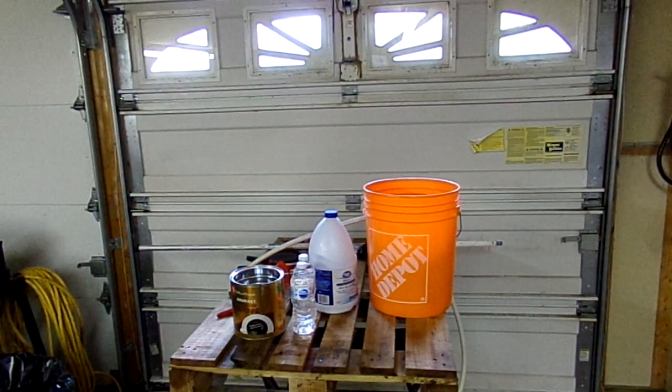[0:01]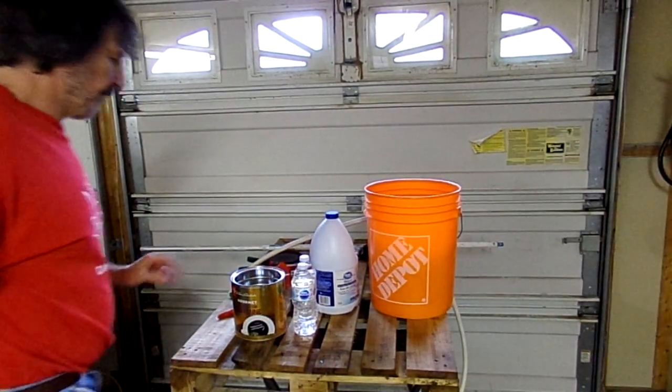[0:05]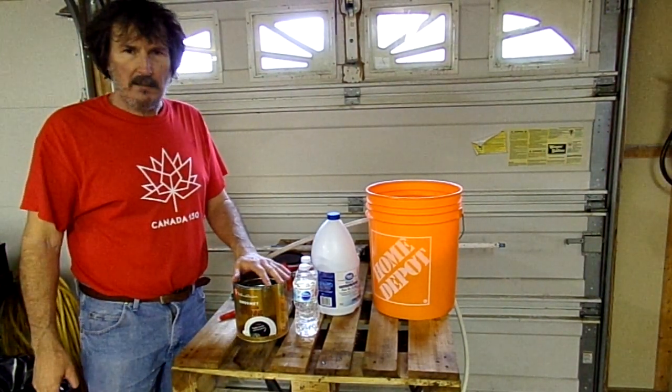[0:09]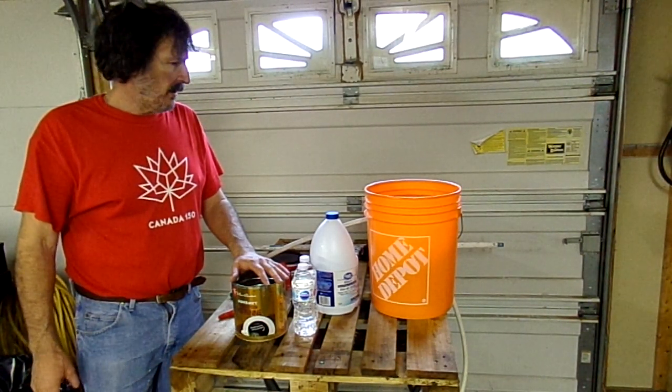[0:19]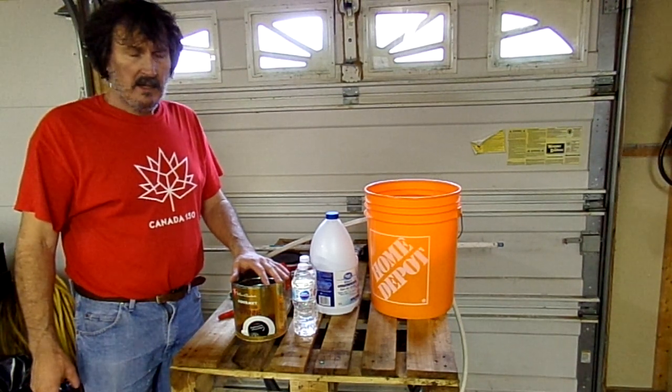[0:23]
Okay, guys, we're recording. Okay, what I'm doing here is I'm going to take the Apollo 13 approach and essentially build a ventilator out of parts at home. If somebody's way out somewhere, they can't get to a hospital, or you need a portable ventilator because you're really sick, this will help. I'm just trying to use homemade parts.
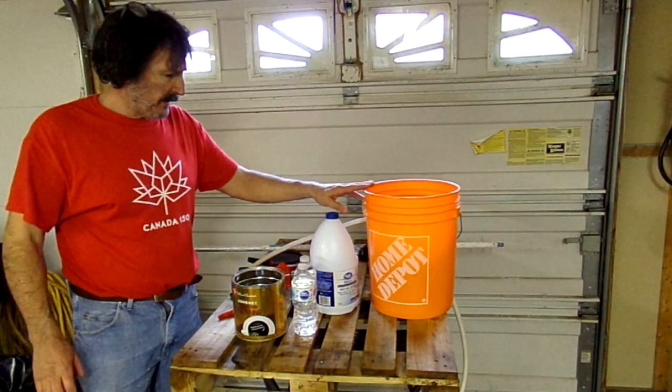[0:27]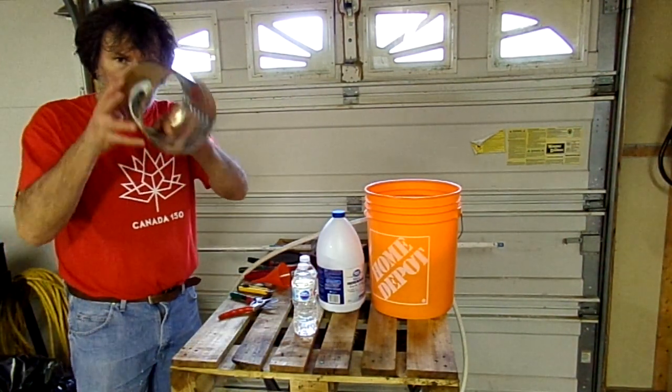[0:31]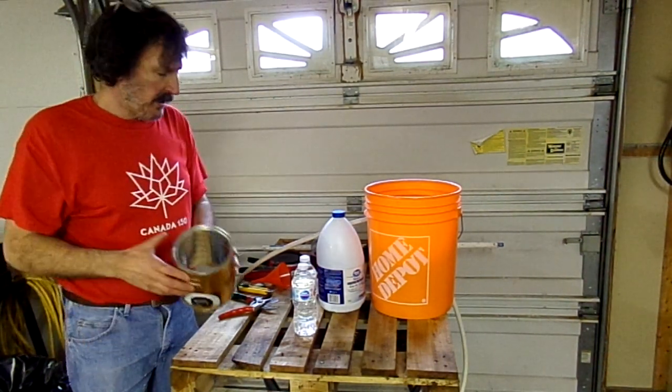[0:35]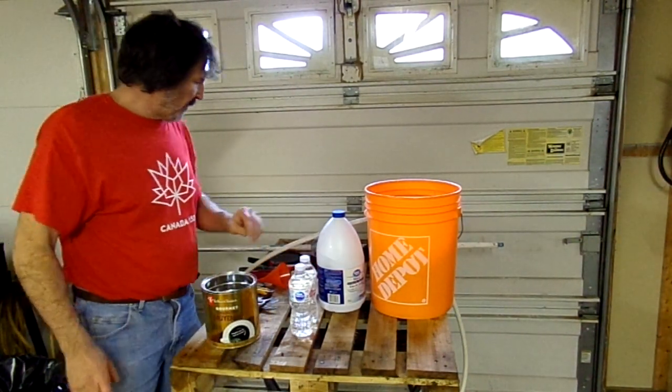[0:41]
I've got a 5-gallon bucket, which most people have. A bleach container, a coffee can. I cut the bottom of the coffee can. I've used a tin coffee can. Don't use a cardboard one because it'll disintegrate. A few water bottles. We're going to need
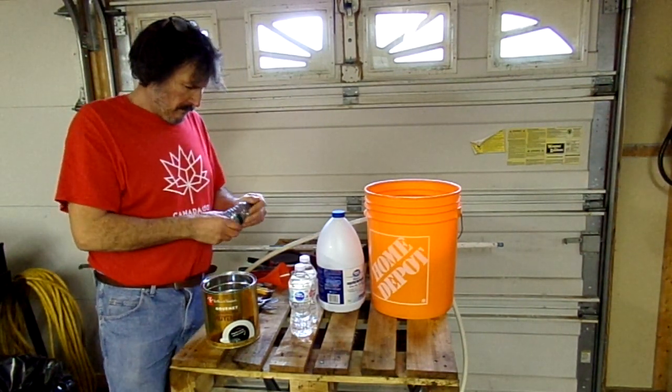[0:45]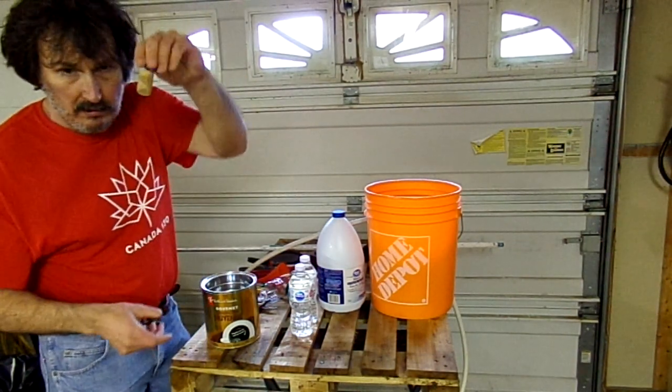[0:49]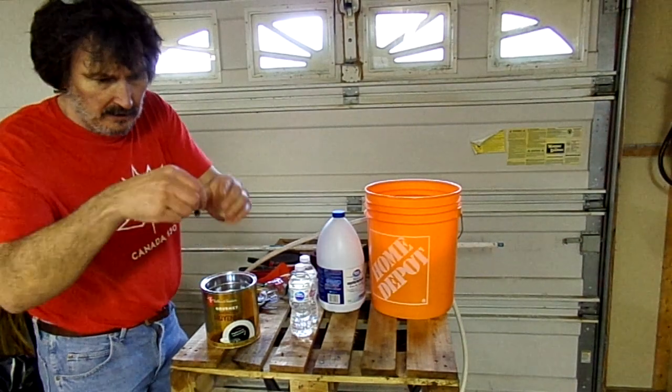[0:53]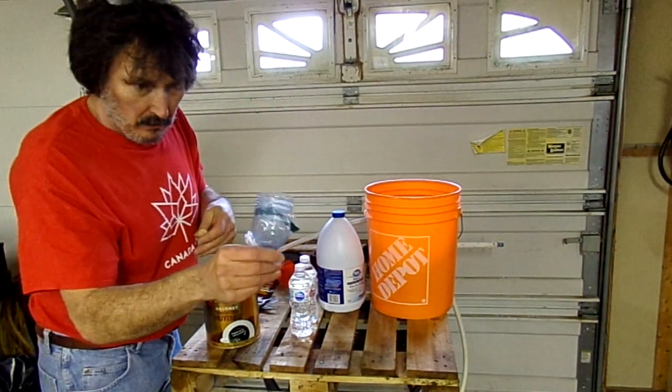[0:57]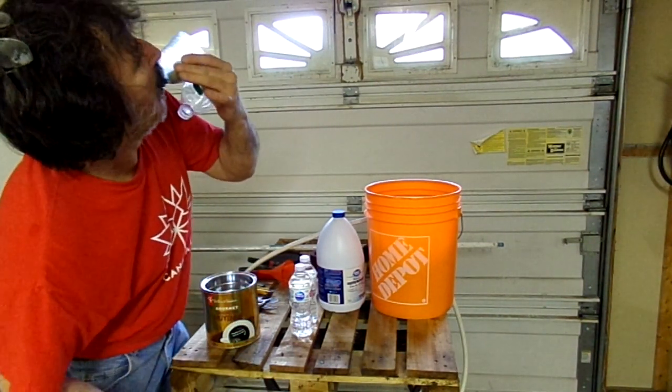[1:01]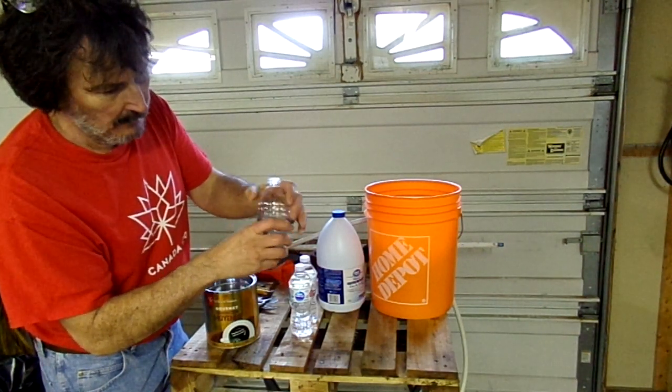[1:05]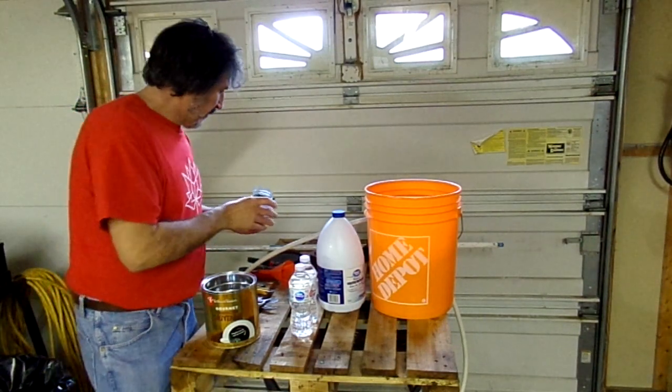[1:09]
if you've got a couple of wine corks around, get a wine cork with a drywall screw and a little nut on the bottom. And we're going to use a water bottle. Drop that in there like so. That'll actually work as your one-way valve to let the air out. Okay, without further ado, let's go.
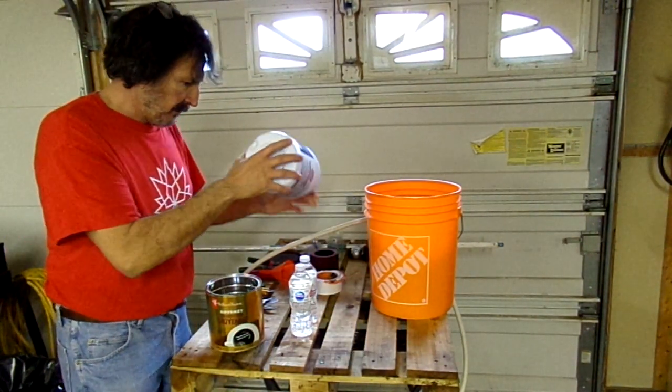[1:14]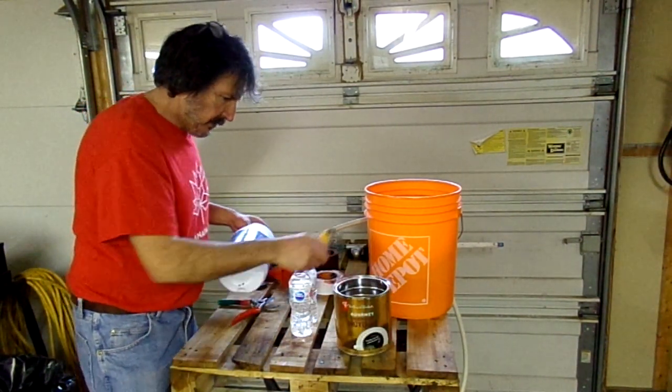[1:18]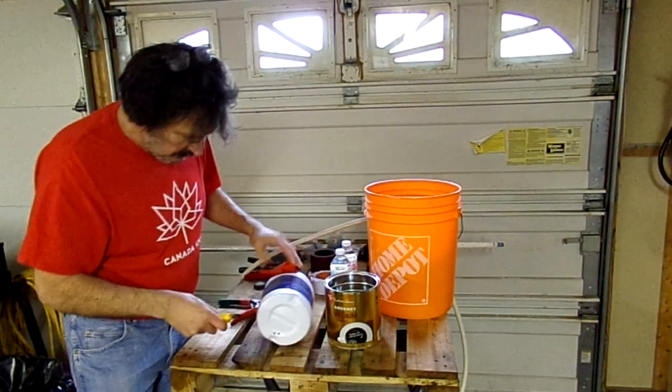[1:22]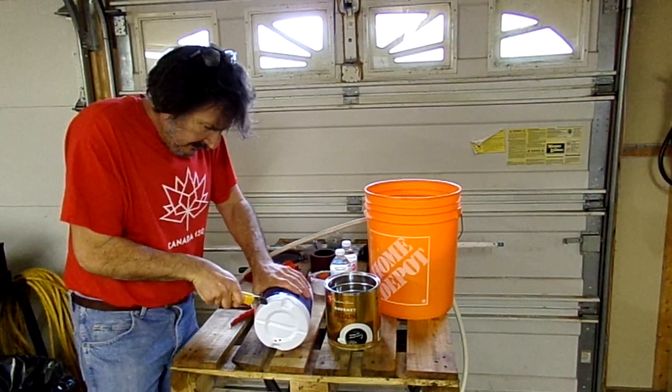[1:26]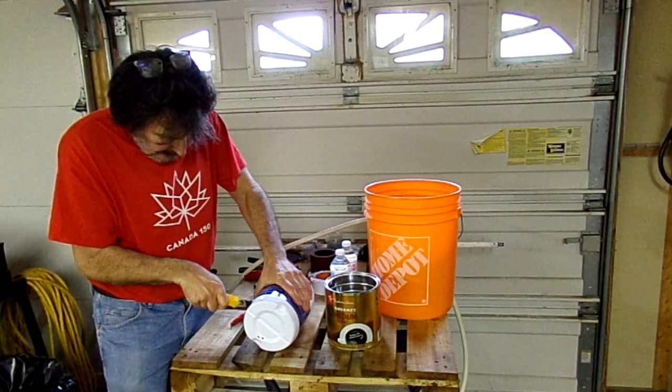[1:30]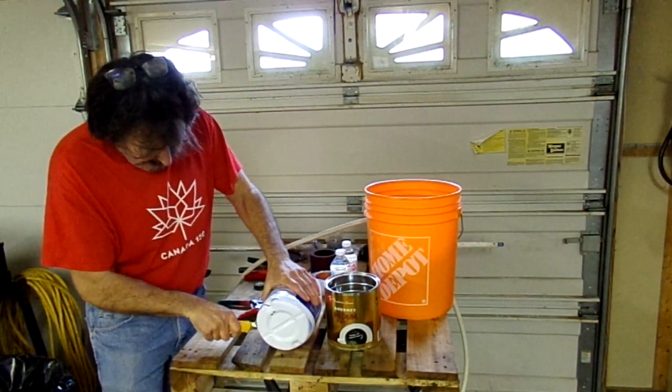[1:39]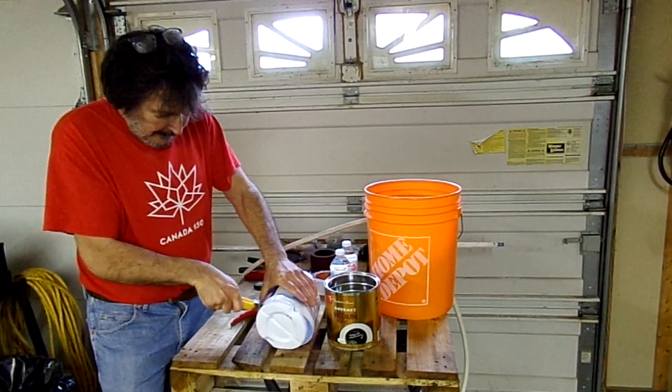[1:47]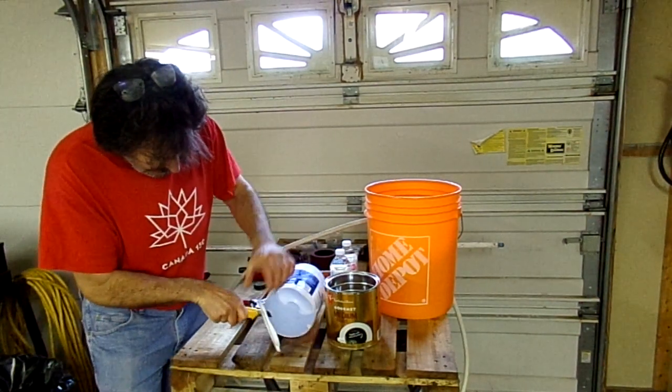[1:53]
I gotta cut the bottom of this out. Don't cut yourself while you're doing this work. And essentially, we just need to cut the bottom of this off. Make sure you wash everything thoroughly.
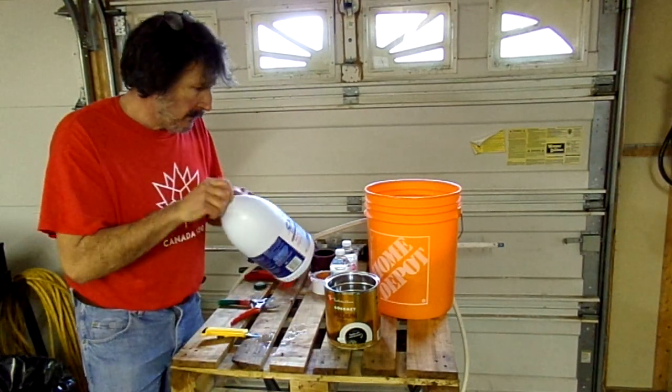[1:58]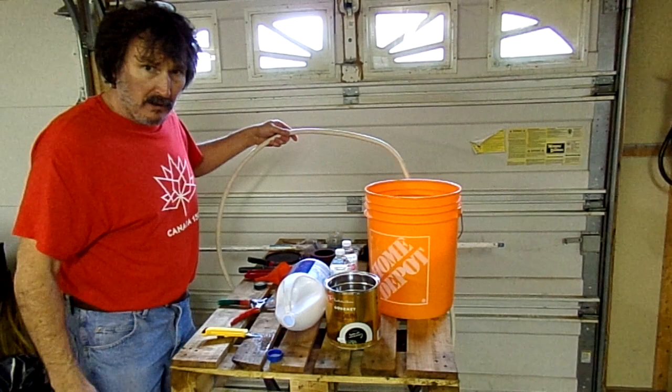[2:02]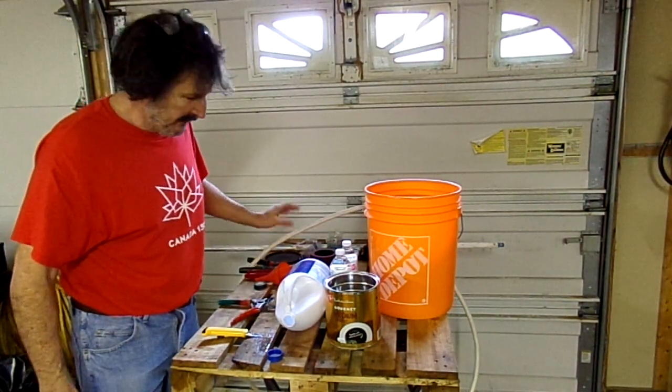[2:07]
You're going to need a piece of garden hose. A lot of the RV garden hoses are potable. They're a white hose. You need to cut yourself about 9 feet off a garden hose.
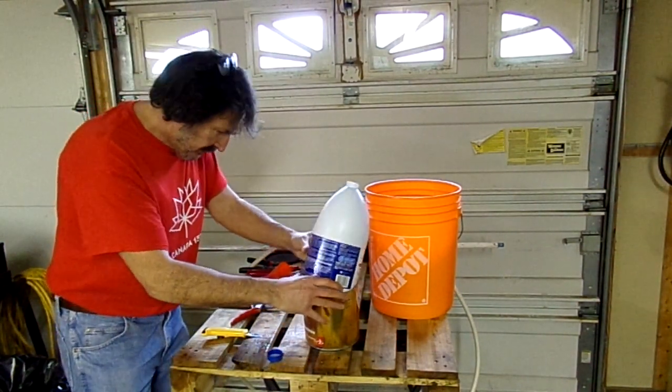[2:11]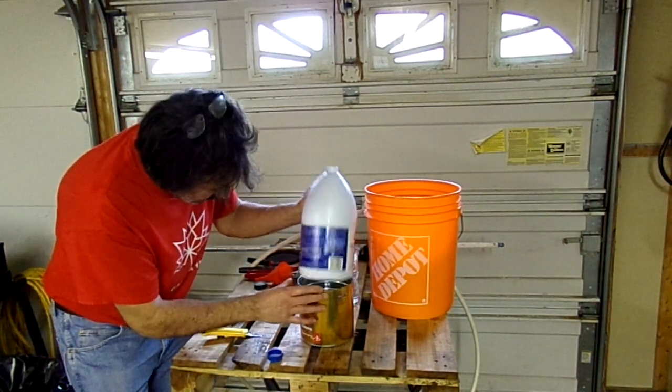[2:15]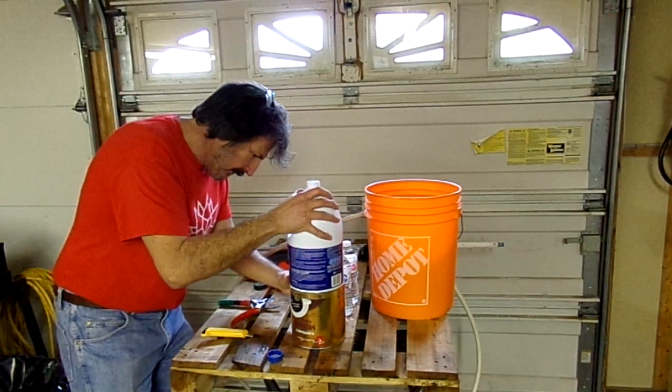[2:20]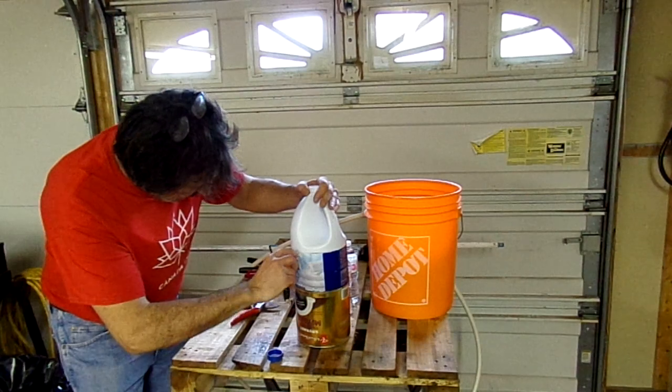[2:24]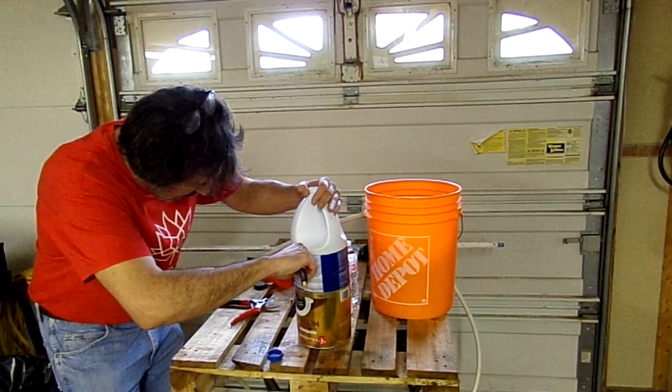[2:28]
Okay, next. How's this going to fit in here? Is this going to fit in here? Where's it going to fit in? Oh, look at that. That fits in. Wow. You couldn't ask for better fit than that. Look at that. Okay, now can we get this label off here? Let's see if we can cut this label off without damaging everything. Alright, now get that started.
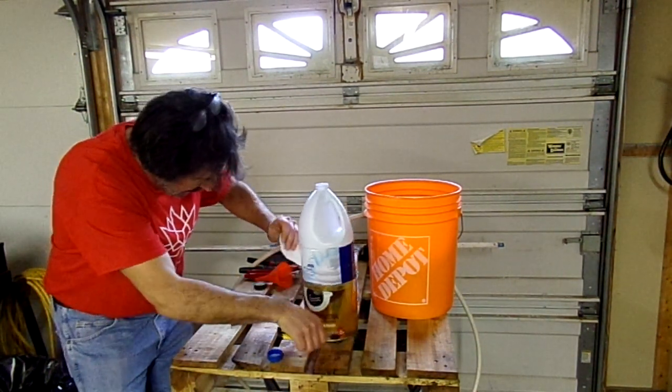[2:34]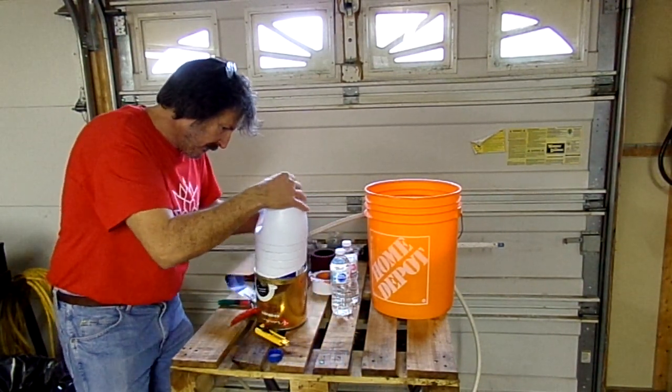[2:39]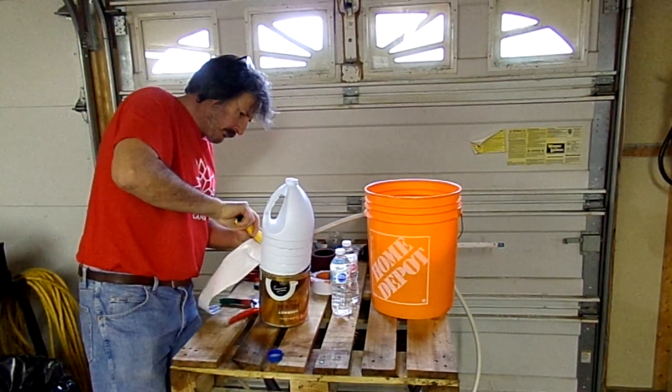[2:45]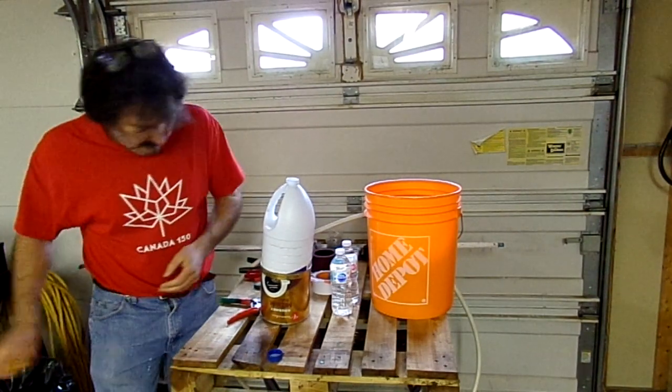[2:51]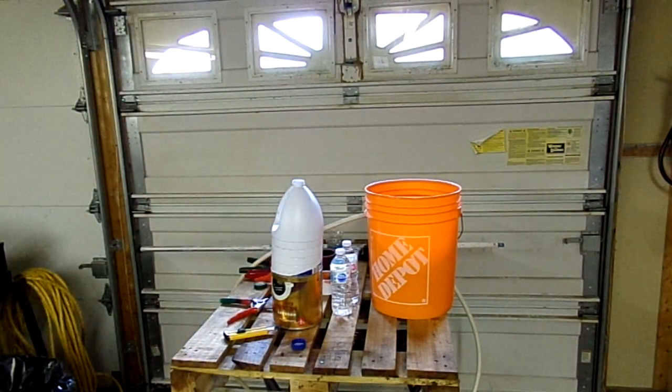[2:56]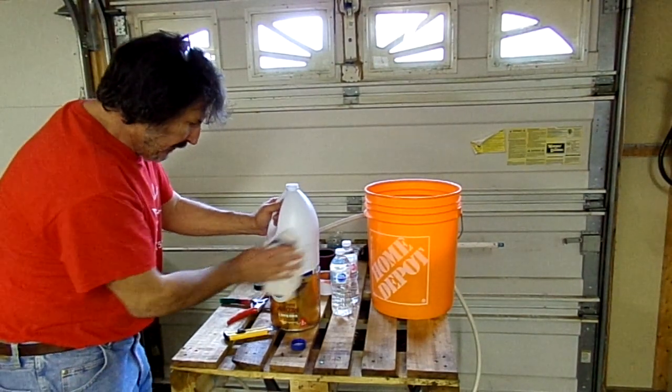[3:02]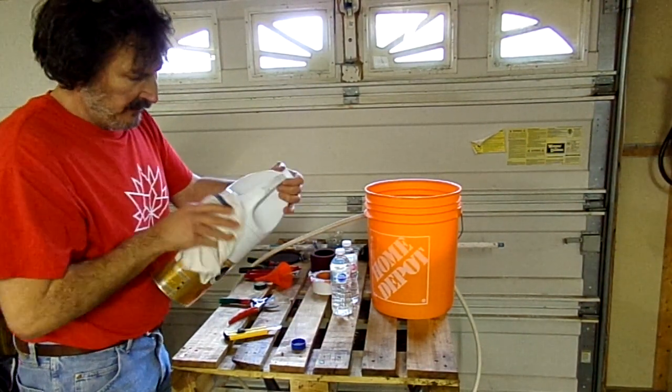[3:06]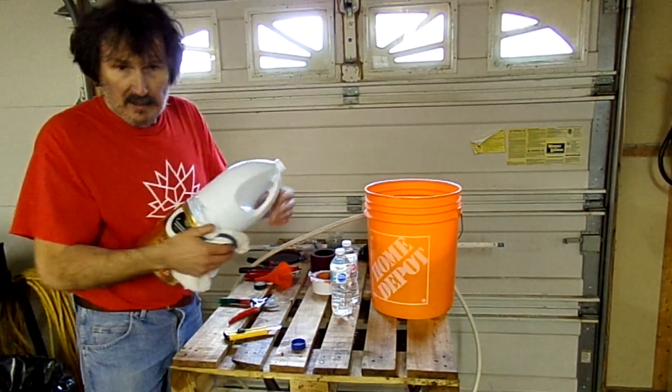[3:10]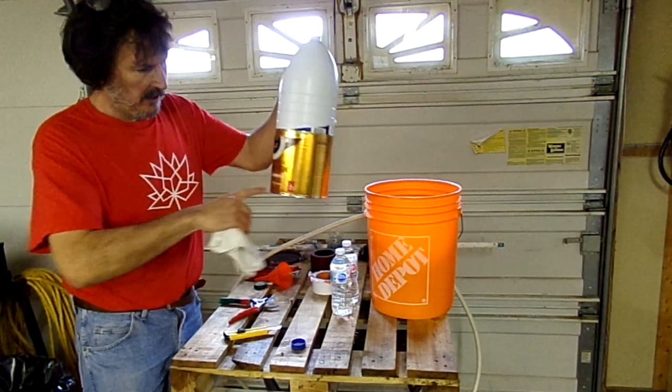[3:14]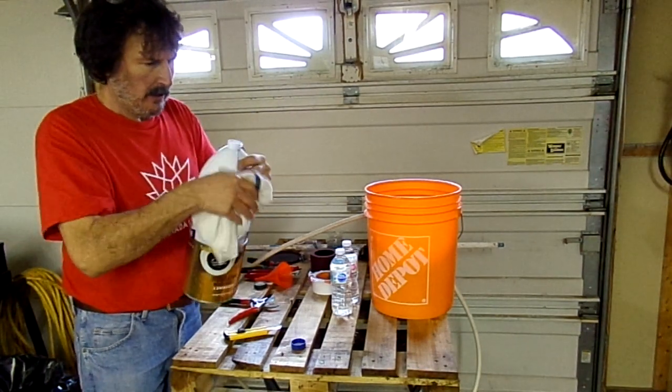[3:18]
Now essentially, the coffee can is 3 liters and change, and so is the bleach container. Humans have a lung capacity of approximately 6 liters, so essentially we're going to be using about that much for the pumping action.
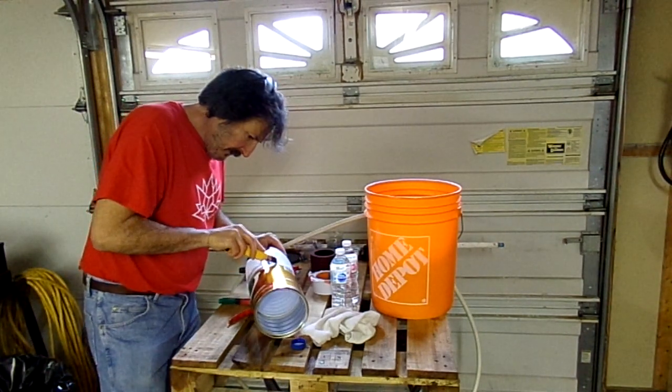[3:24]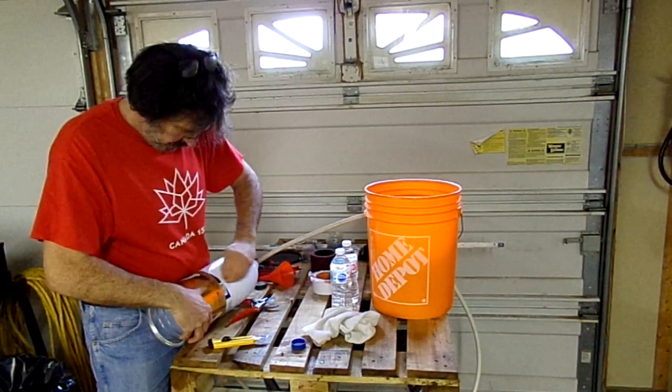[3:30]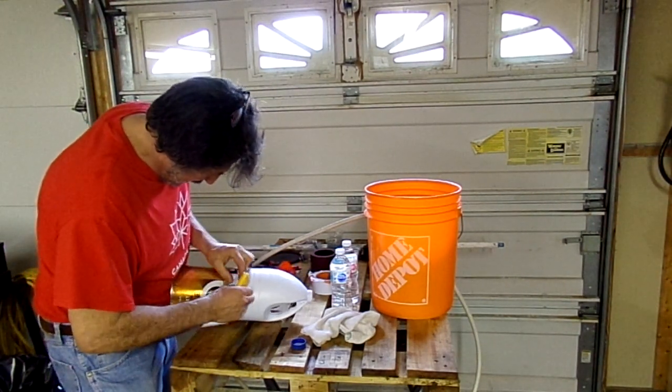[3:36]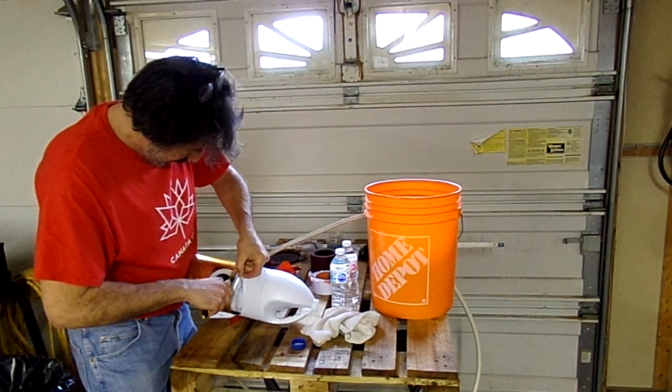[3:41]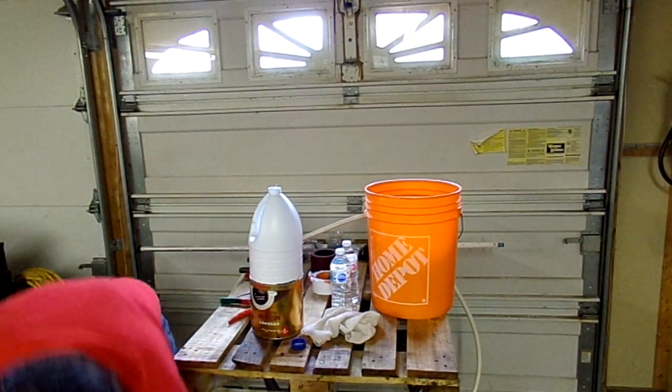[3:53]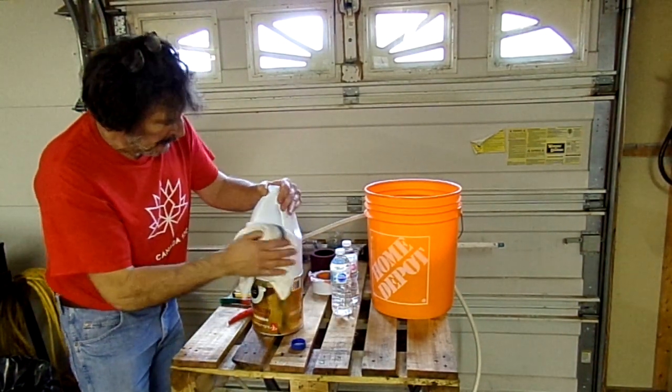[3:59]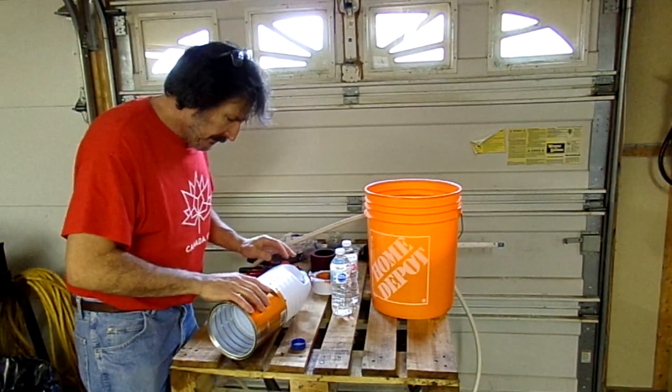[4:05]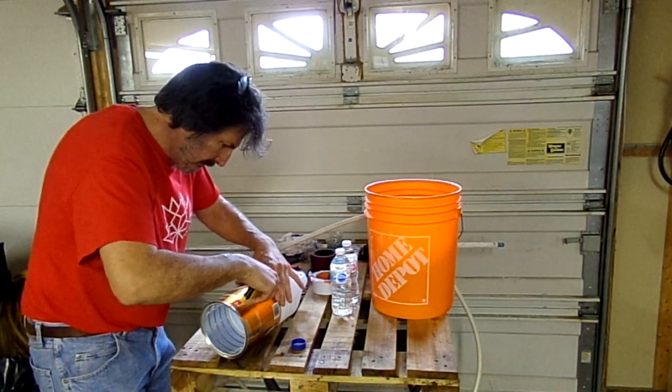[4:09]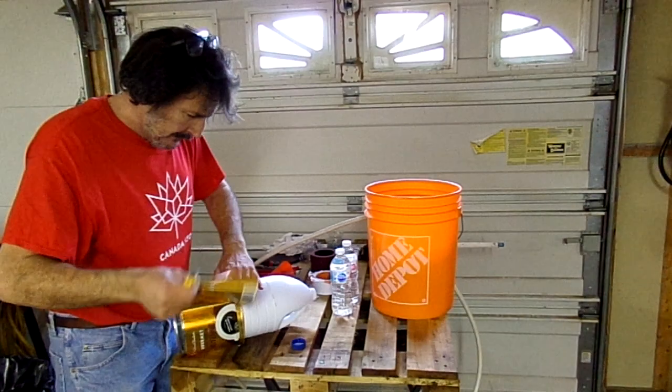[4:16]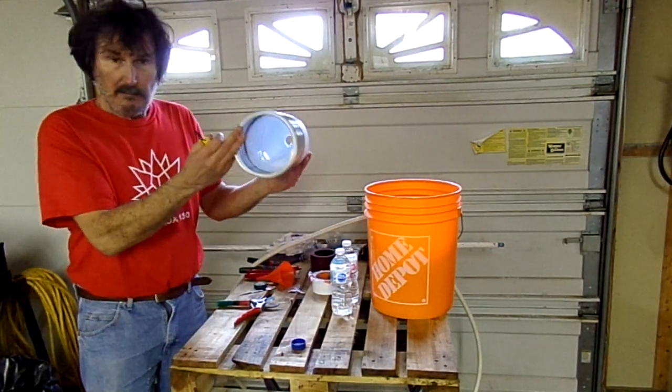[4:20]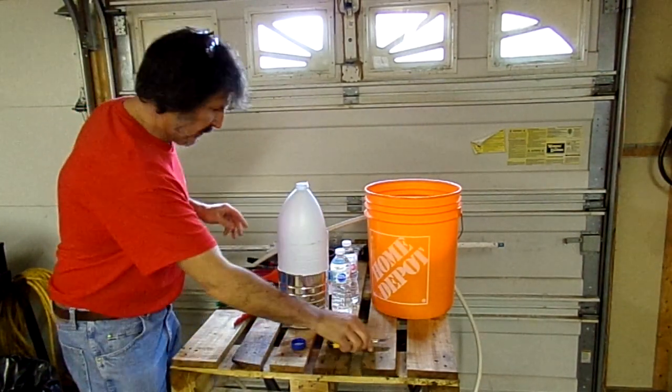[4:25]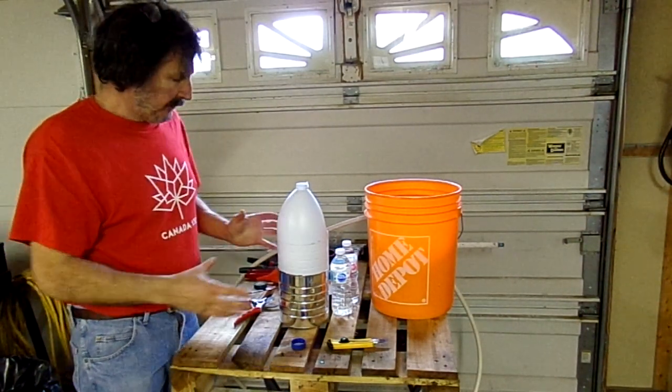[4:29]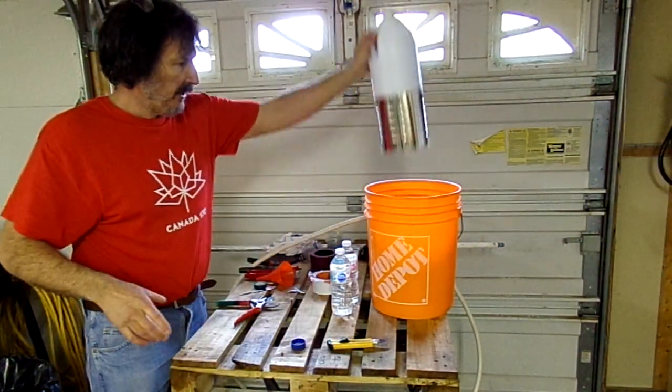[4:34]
Some duct tape around, that'd be good. Let's get rid of this label as well. Okay, so there we have it. That's going to be our chamber for pumping our air into our ventilator. Very simple, 2 pieces. You can use 3 2-liter pop bottles and just tie them all together into one. Now fit in so you can do your pump action.
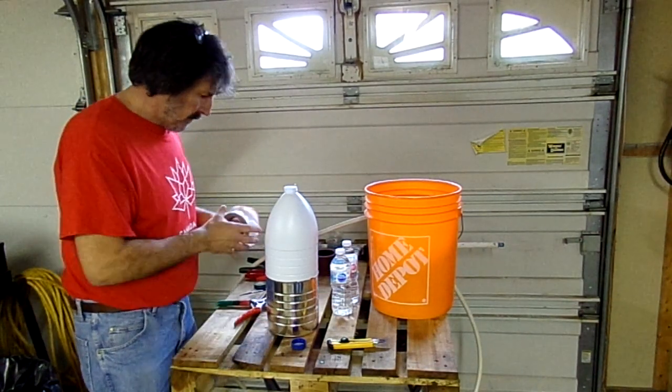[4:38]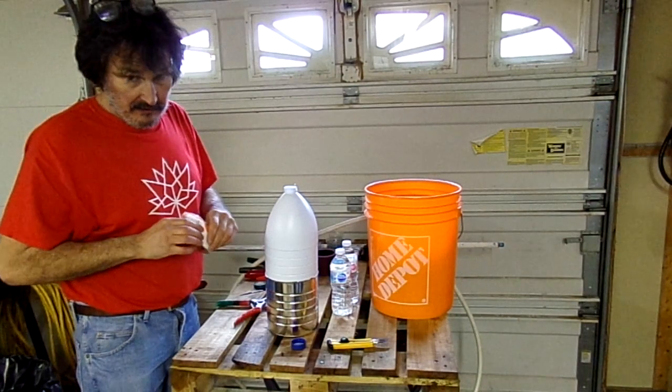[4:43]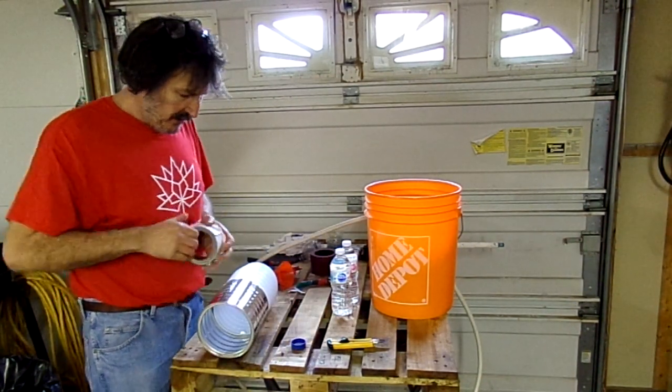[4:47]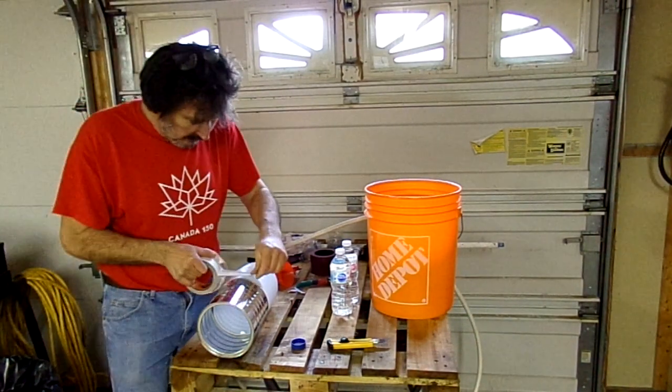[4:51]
Okay, now get yourself some Gorilla Tape. Gorilla Tape's the best. This stuff is really strong. I'd recommend it if you don't have it. Whatever you got, even Scotch Tape will work. Painter's Tape will work. Any kind of tape. The Gorilla Tape is nice because it really holds on well. And if this is going to be used for any amount of time, this is going to be good.
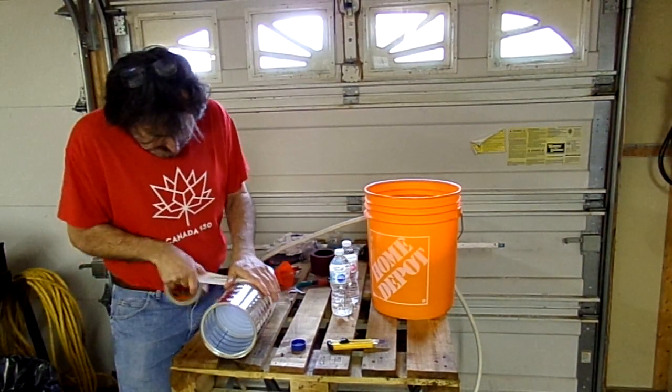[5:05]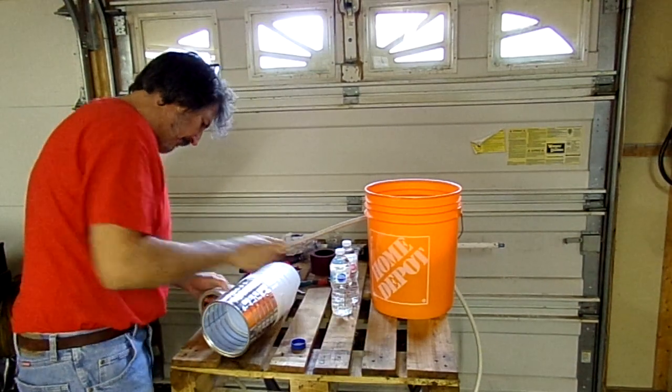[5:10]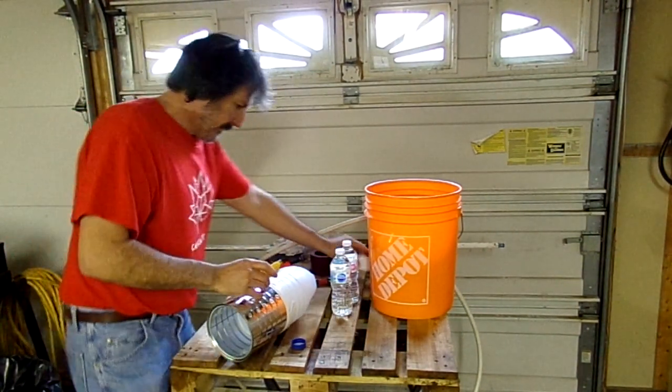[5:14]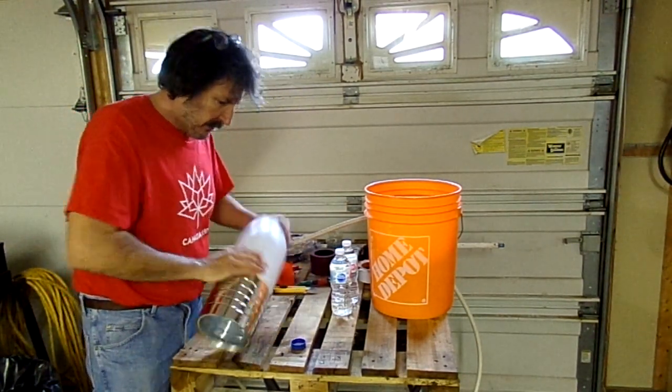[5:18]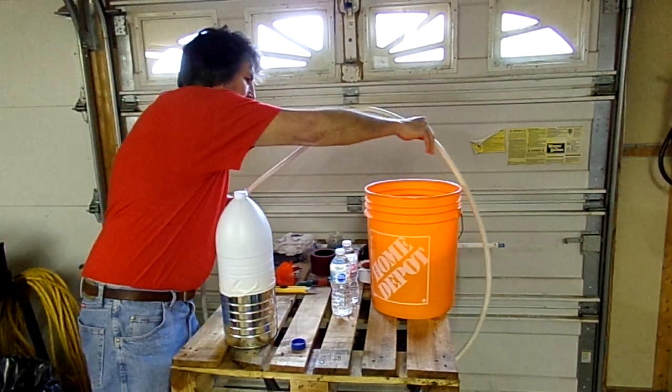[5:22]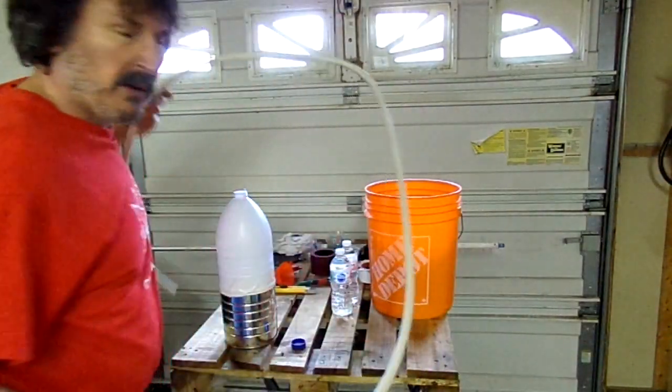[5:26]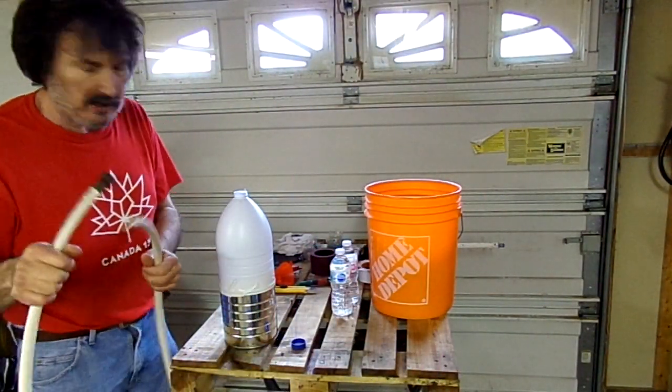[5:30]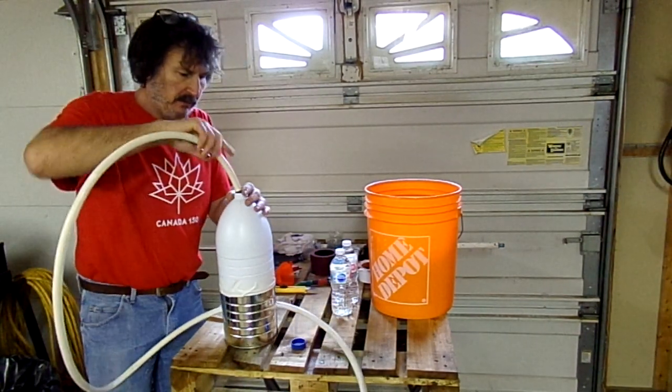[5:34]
Okay. That's done. A little neater, but that's not bad. Now, the garden hose. If you can get a potable water one, that's better. Then you won't have that vinyl taste you get when you're a kid and you drink water out of the tap. Well, you won't have that if you use one that's potable water. So I'm just going to put that on top.
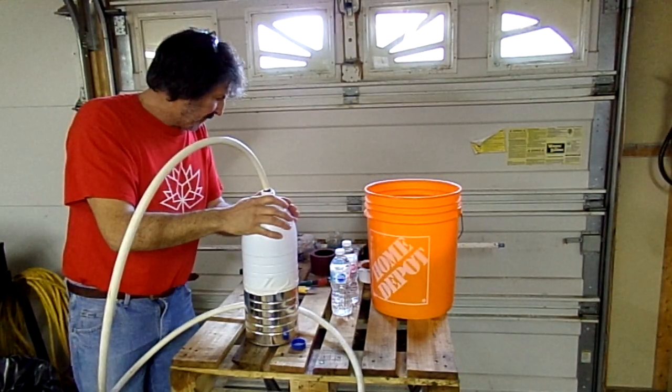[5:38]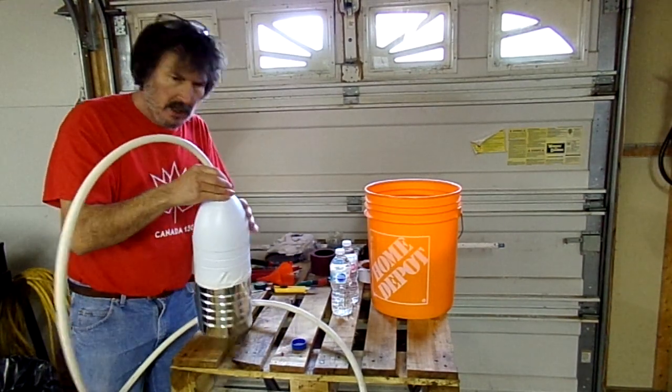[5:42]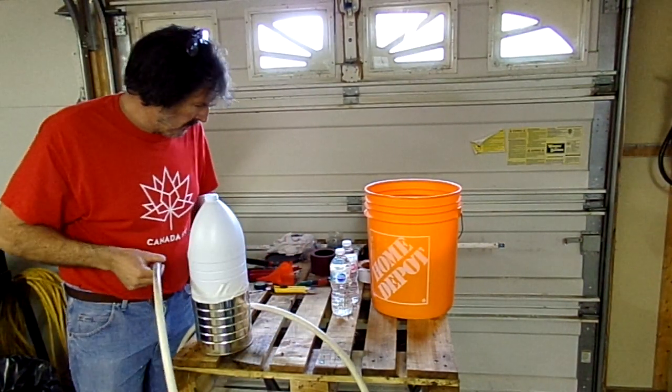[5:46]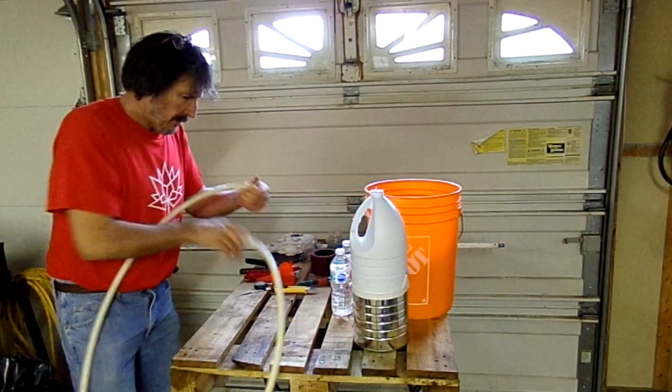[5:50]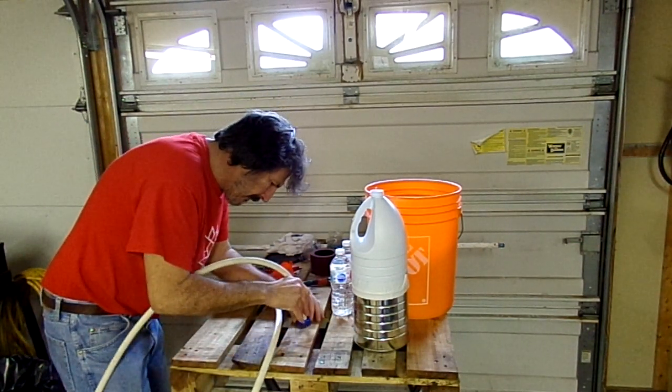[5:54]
Now, there's a couple different things we can do. We can actually maybe use the lid. Yeah, maybe use the lid to get a better seal. Yeah, let's do that. Get a little better seal on there. Okay. So we just need to mark that.
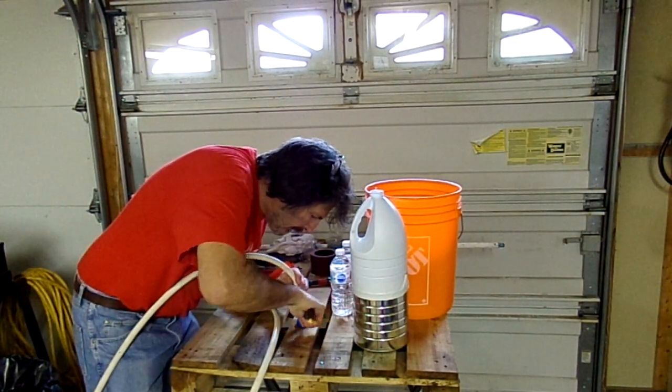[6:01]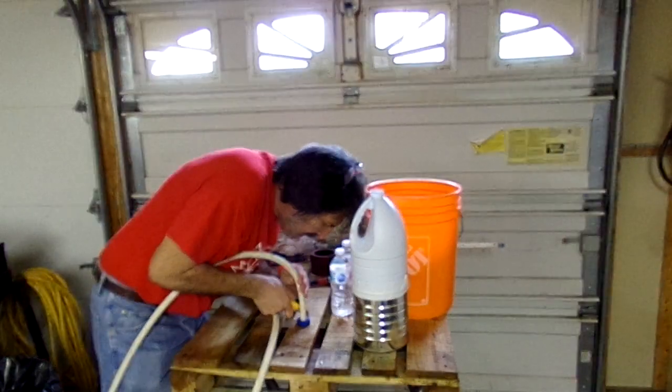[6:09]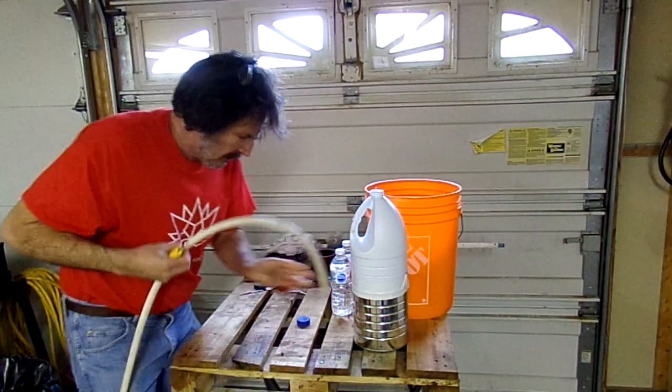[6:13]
You just be really careful you don't cut yourself, because there's already enough people in the hospital. You don't need to be going to the hospital with a cut during this pandemic. So slow and steady wins the race. There we go.
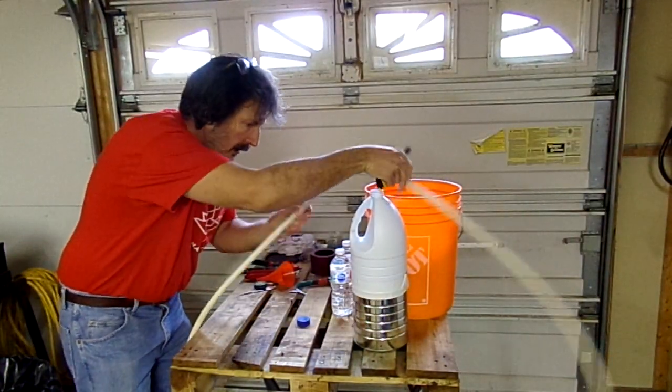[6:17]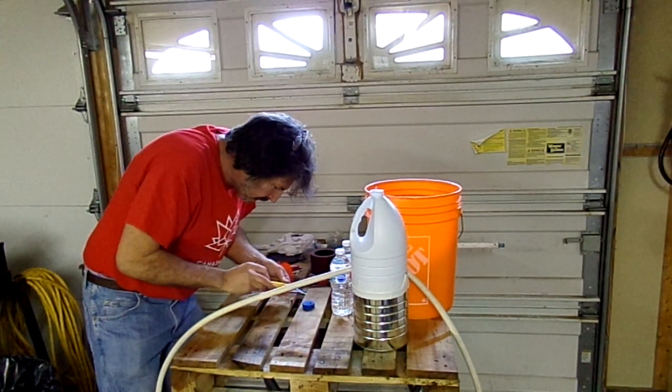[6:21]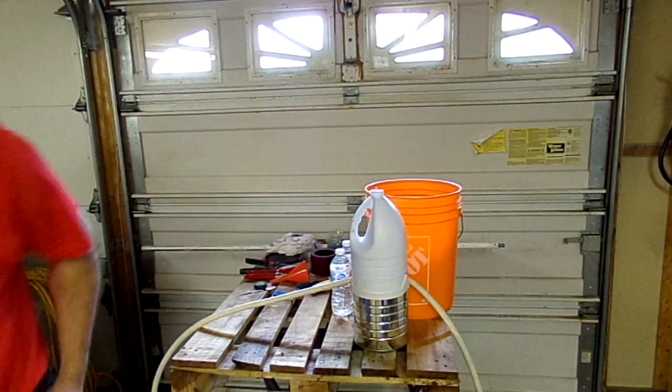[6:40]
Get yourself a work surface to work on. It's much easier than trying to work on the ground. I'm a tall guy, so it's a lot easier. Okay, now, I'm gonna see if I got a drill bit around for that.
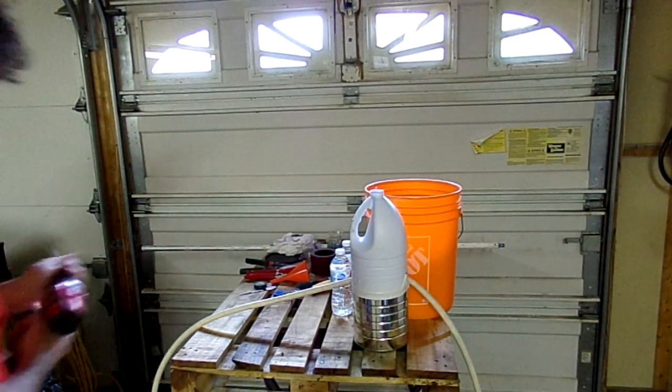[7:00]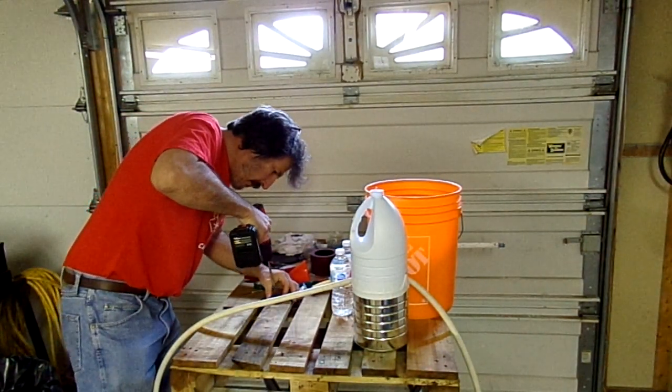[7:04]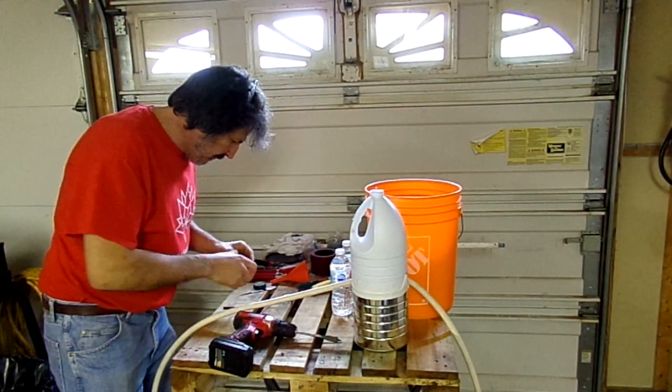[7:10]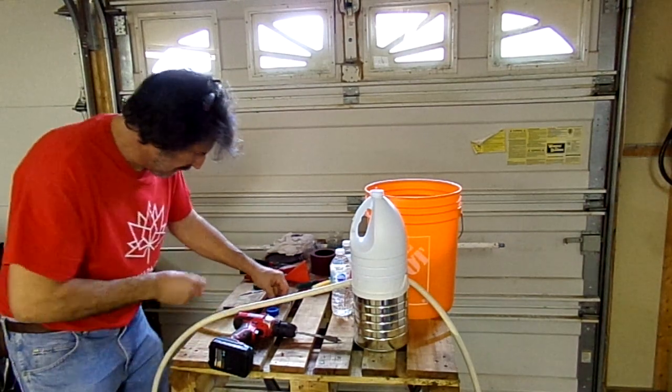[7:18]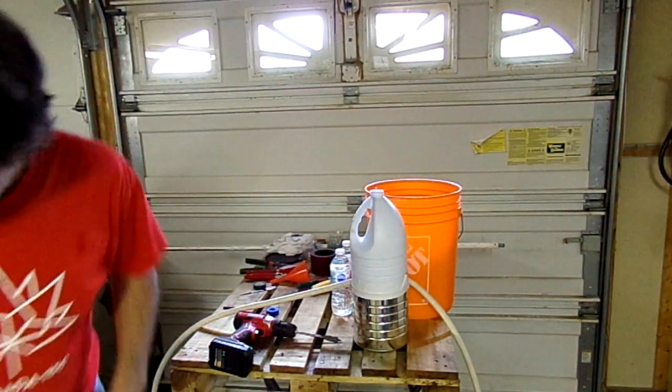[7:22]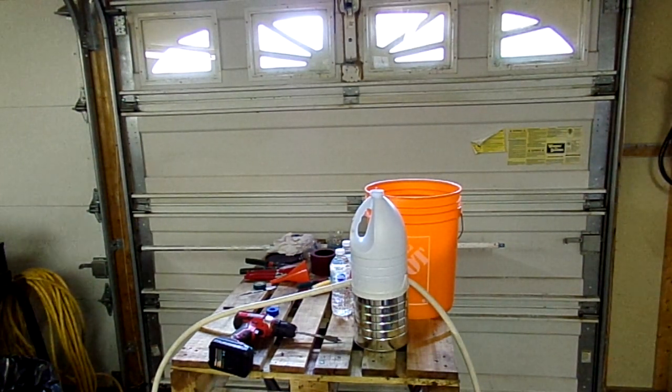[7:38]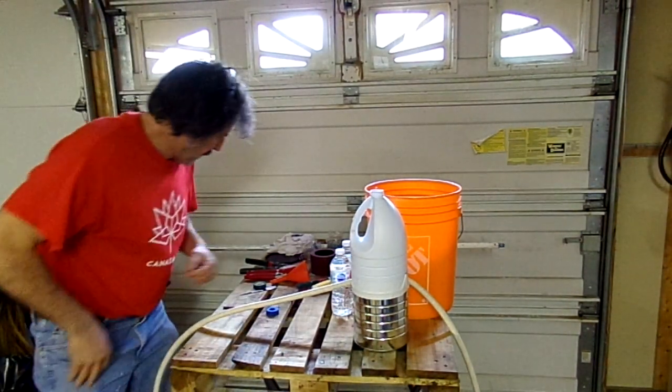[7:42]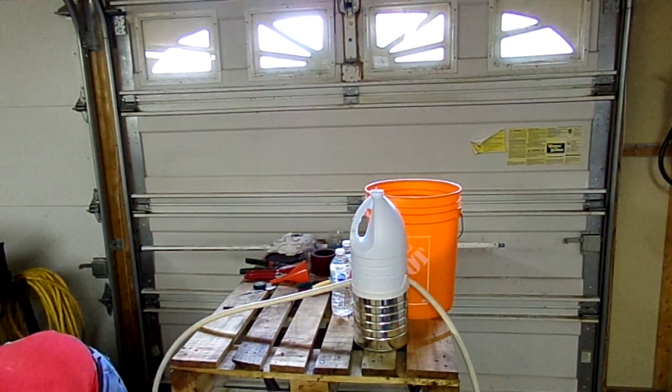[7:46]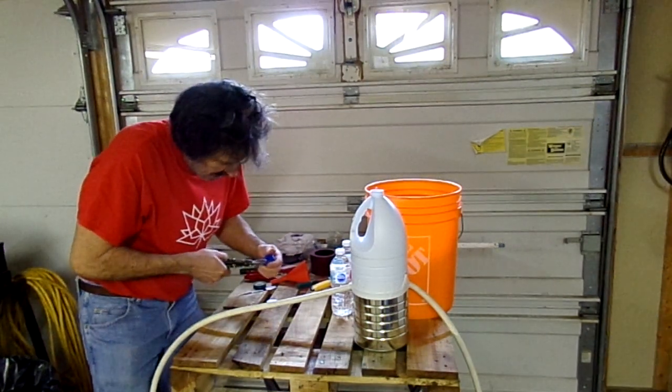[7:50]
Okay, let's not worry about that. Let's keep taping. Get that out of the way. Maybe some snips. Tin snip, sometimes it's easier to cut these.
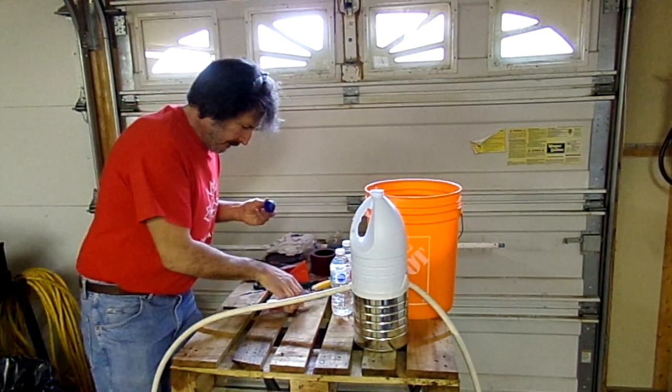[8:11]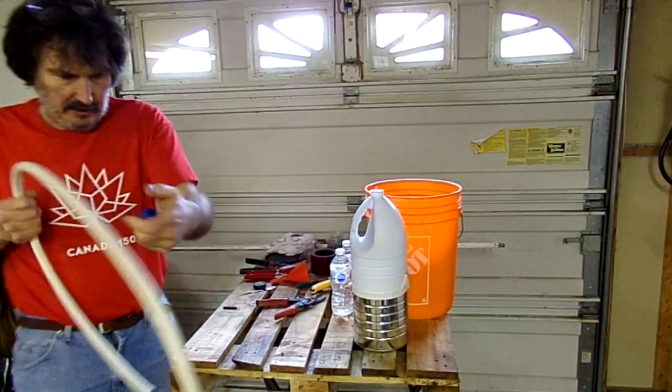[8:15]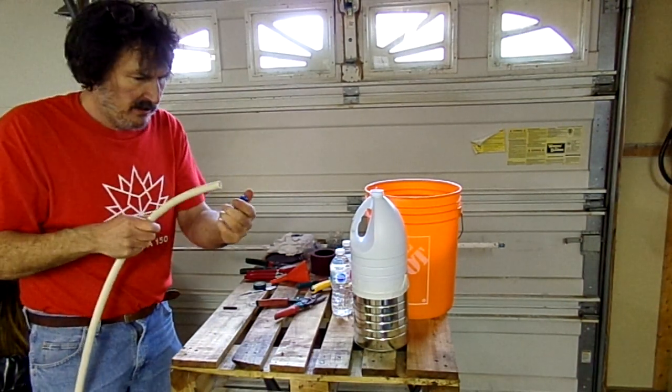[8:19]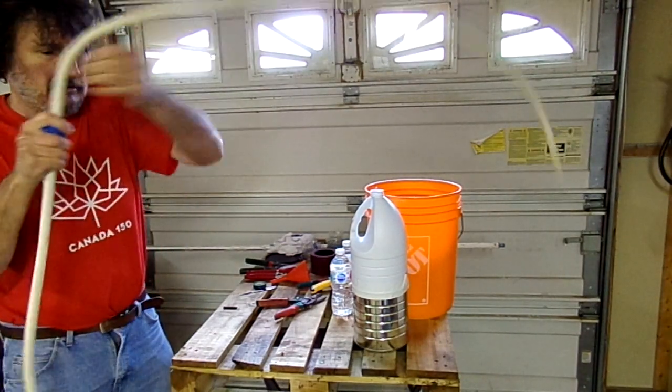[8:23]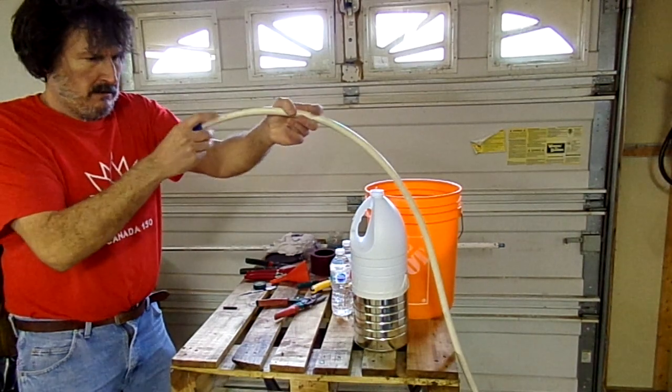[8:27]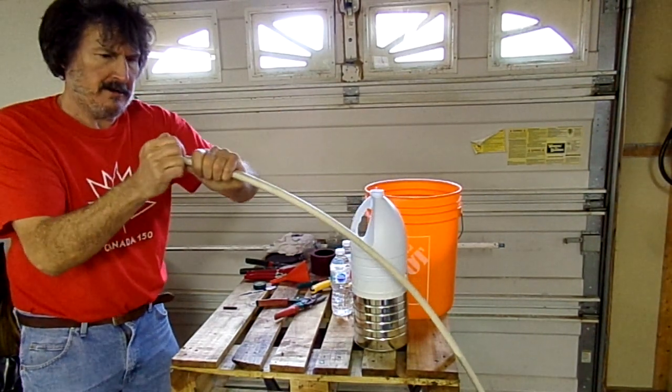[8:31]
I think that's probably pretty good. Let's see, that'll give us a more robust seal. Okay, yeah, it's pretty good. It's not bad. Okay, now. Actually, that's nice. That's really nice. Well, that worked out pretty well.
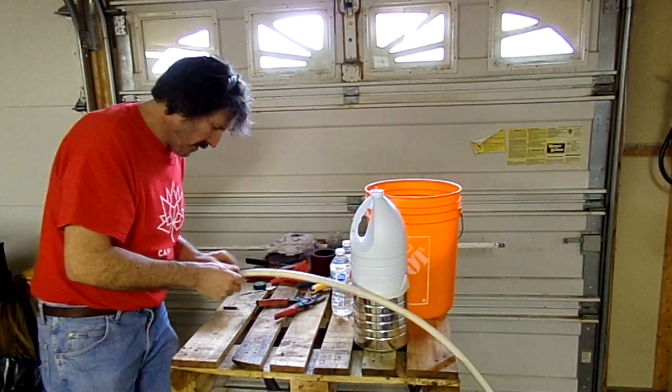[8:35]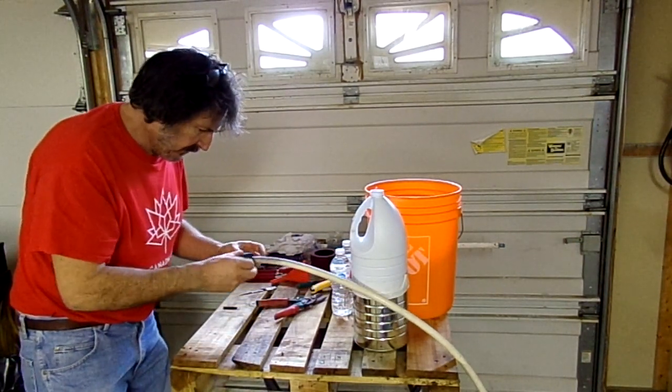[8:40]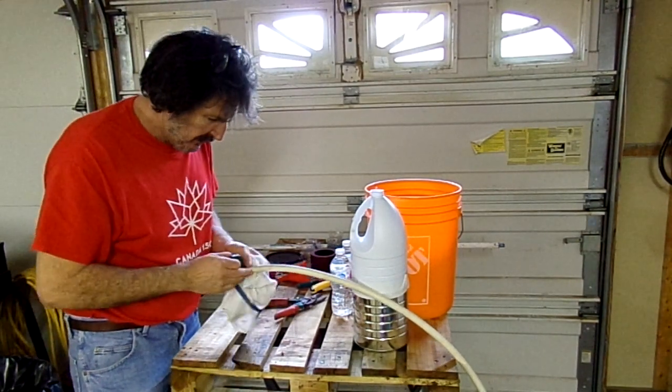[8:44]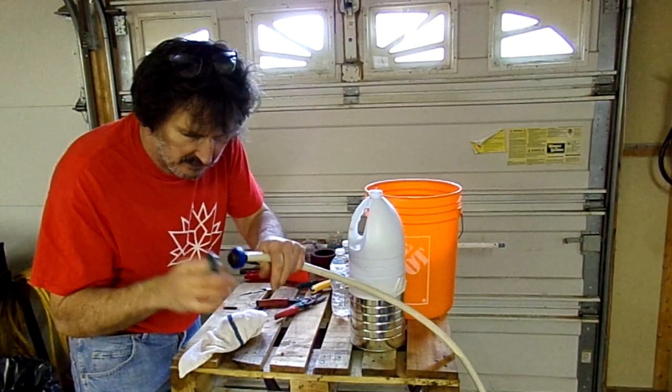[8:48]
Okay, now. If you didn't do a really good job, or even if you did do a good job, put a little tape around it. I'm using some electrical tape. Dry it off, make sure everything's good and dry. This looks a bit dirty, but it's not. It's all clean. That was all bleached with water, so that's good.
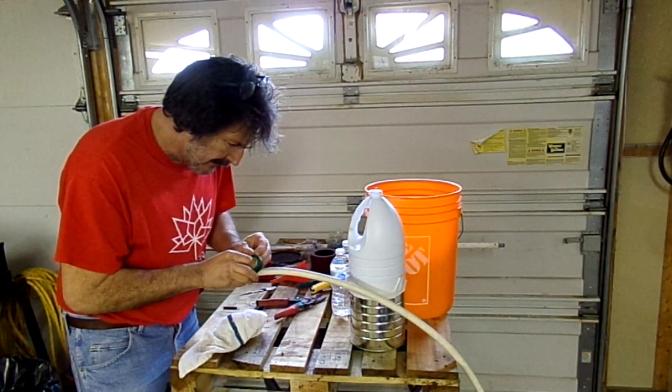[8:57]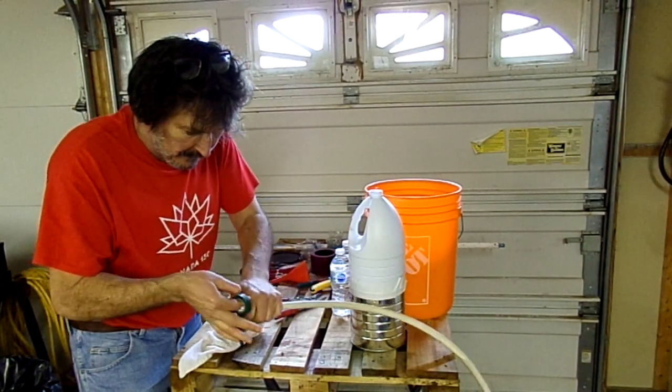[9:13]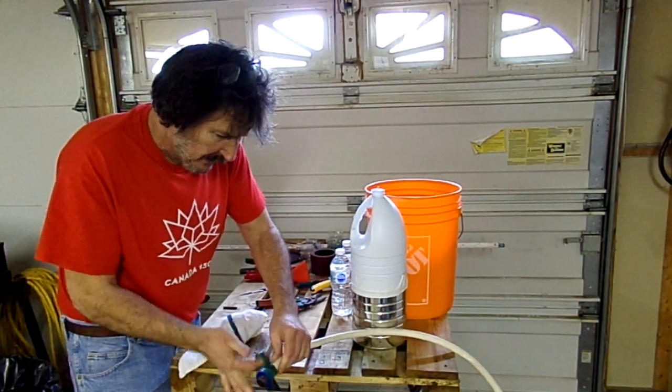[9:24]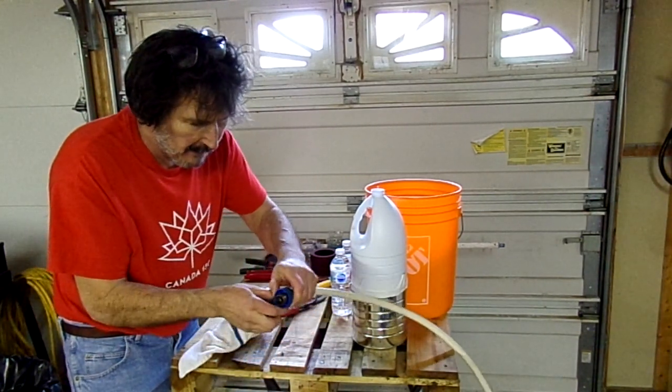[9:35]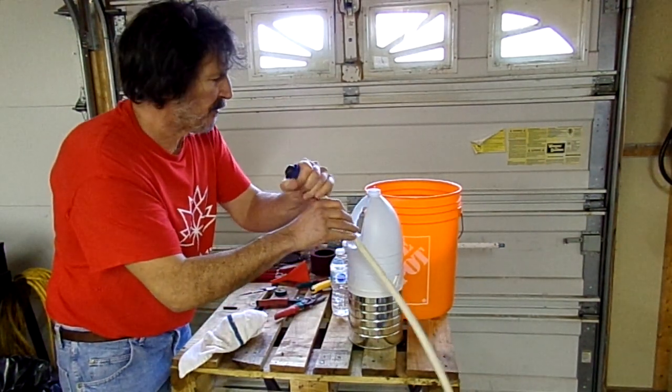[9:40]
Now, you're going to want to get yourself a broomstick or something that you can hold on to when you're using the pump. Okay, if there's any interest, maybe I'll do a video on a powered one. I'll hook up the power and make the thing pump. There was a video on YouTube where some family kept a guy alive for like a year just using a rubber one. It was pretty crazy. But anyways, this is basically manual, but I can upgrade it to an electromechanical one if there's any demand for that.
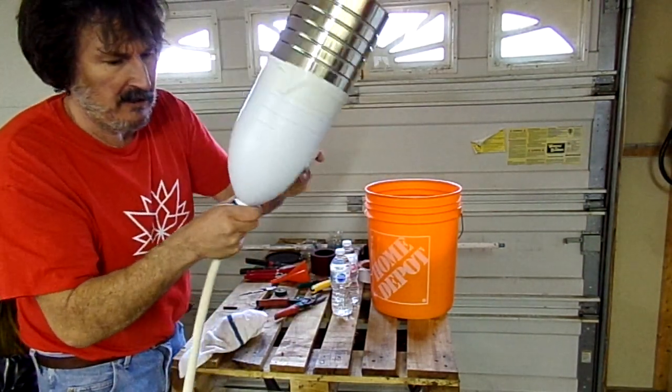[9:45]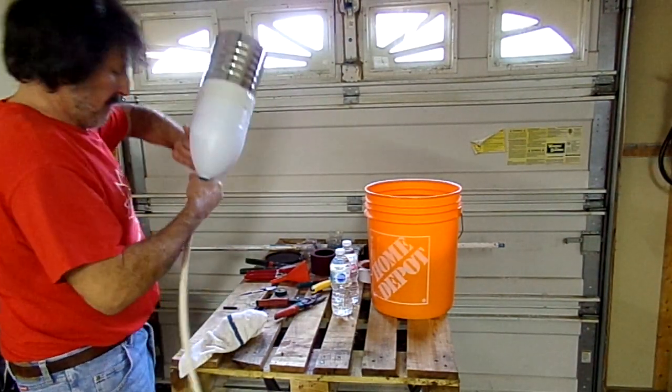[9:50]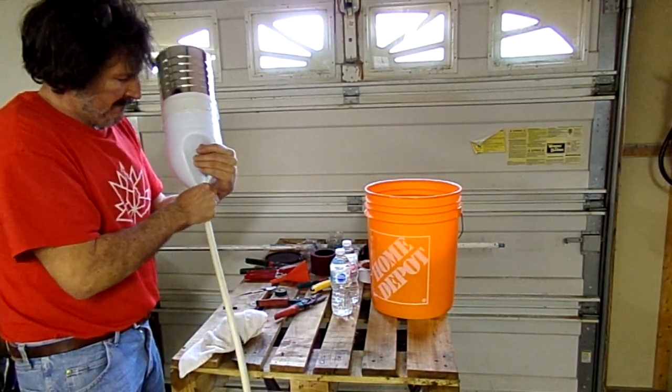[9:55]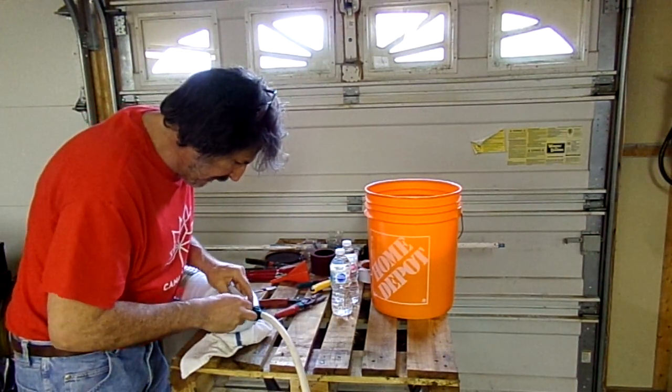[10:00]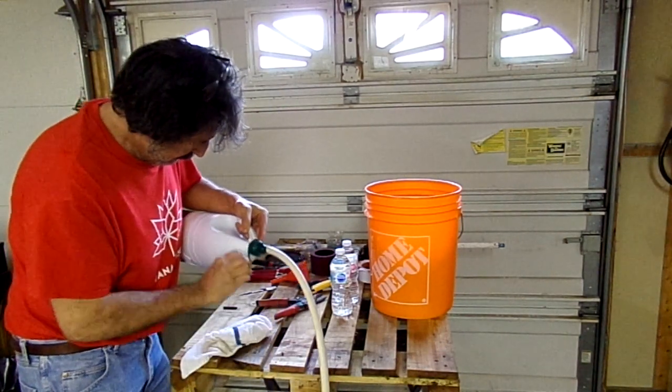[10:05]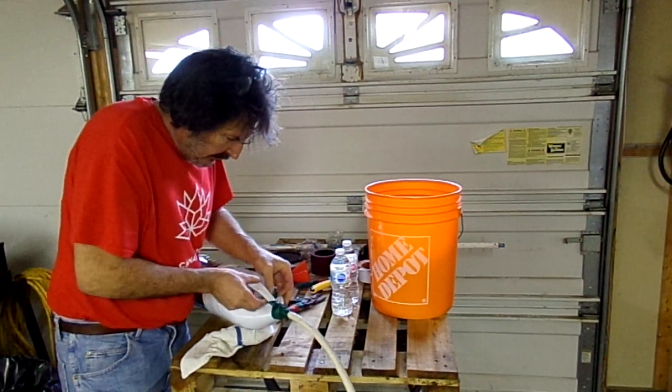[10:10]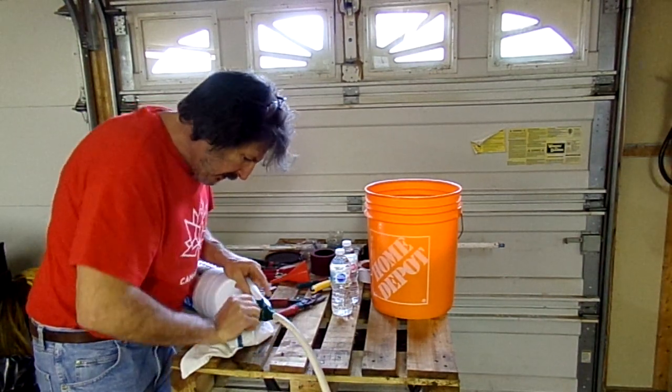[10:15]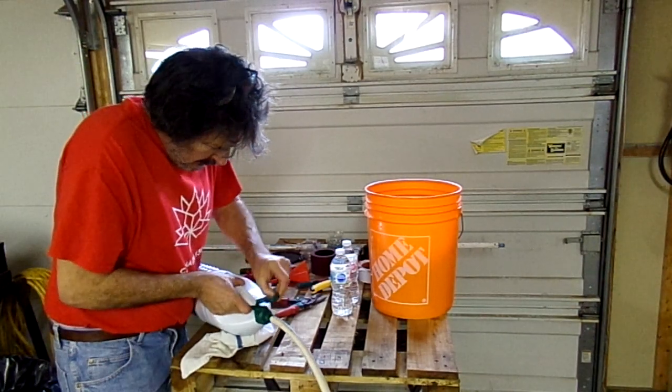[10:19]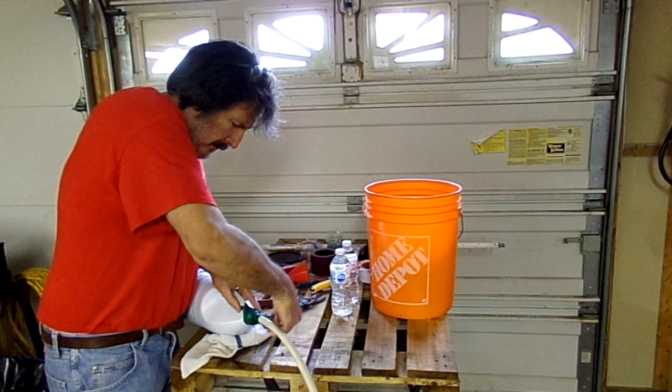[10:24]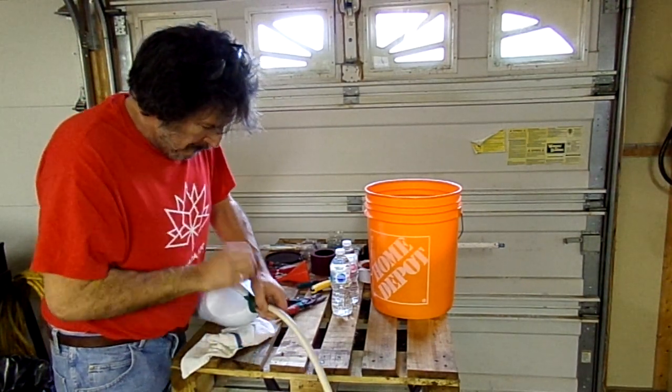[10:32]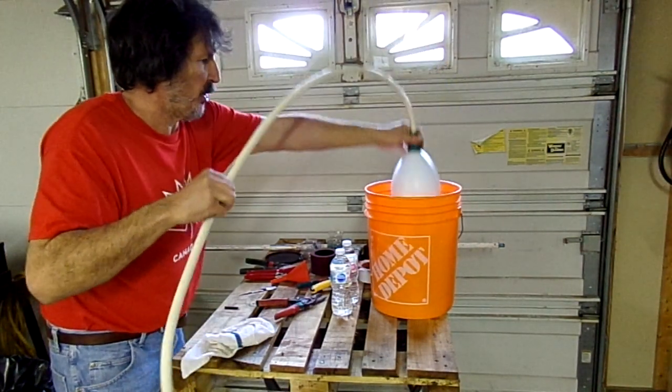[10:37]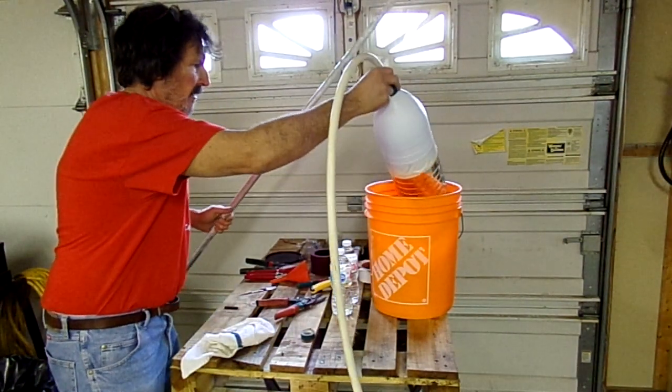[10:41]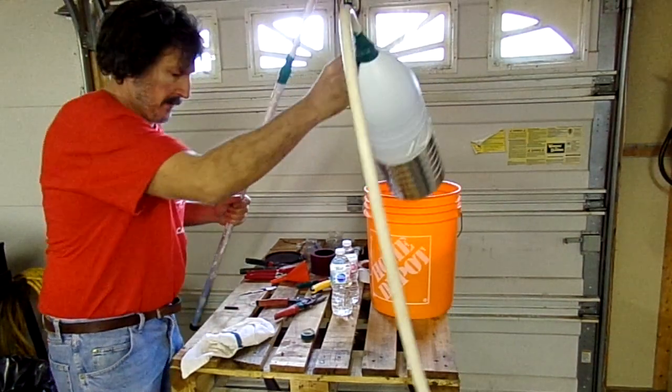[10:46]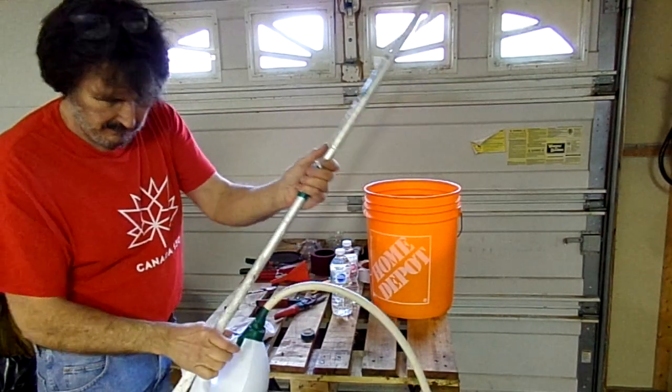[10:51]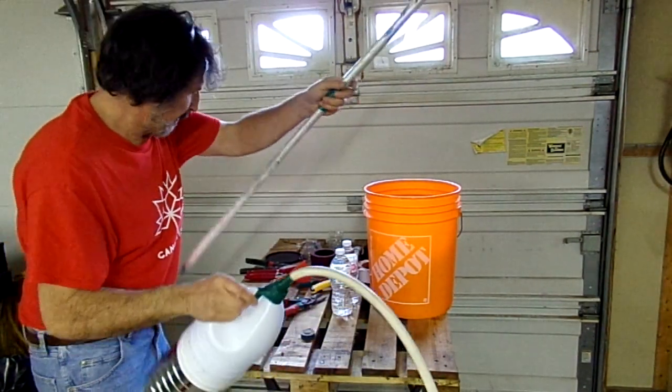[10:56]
Let's put those together. Get on there. Okay, that's nice. Put a little tape around that so it can't come unscrewed. I'm going to hook that underneath the handle there, just so it can't come dislodged. Okay guys, I think I'm pretty happy with that. Now, it's going to be going in like so for our pump. Essentially, I'm going to take that and tape that on like so. So essentially, you can put it like that.
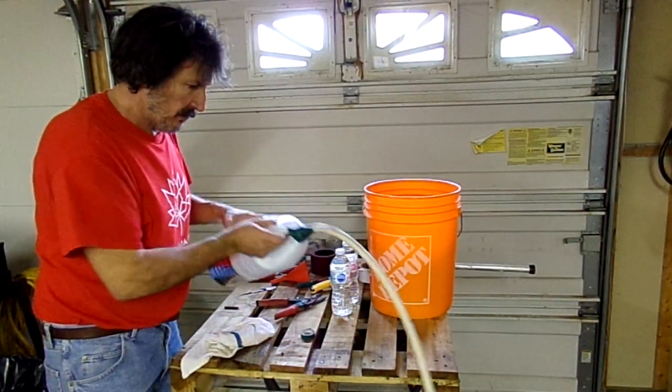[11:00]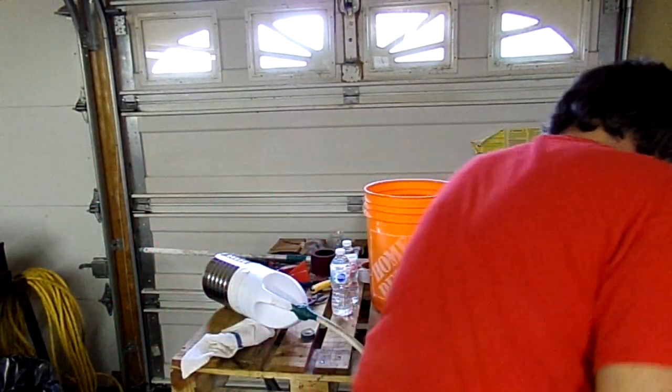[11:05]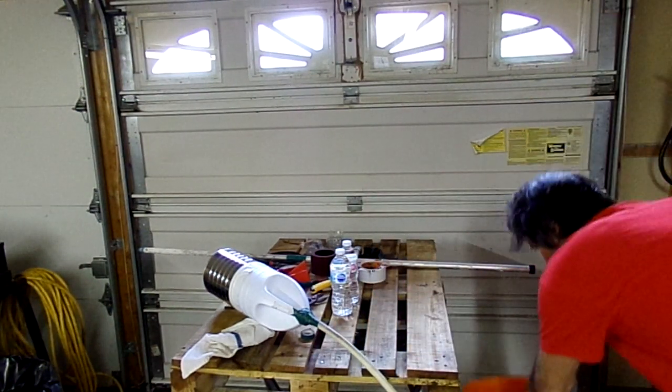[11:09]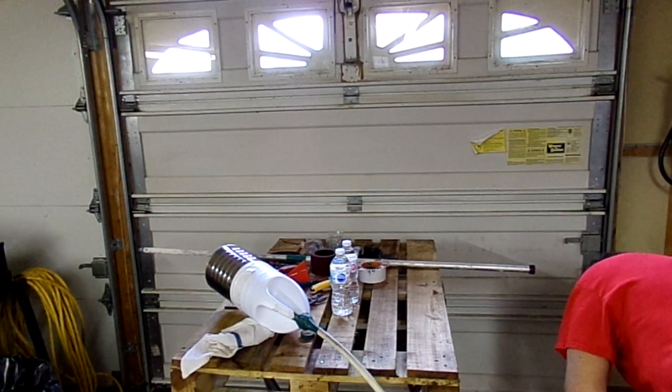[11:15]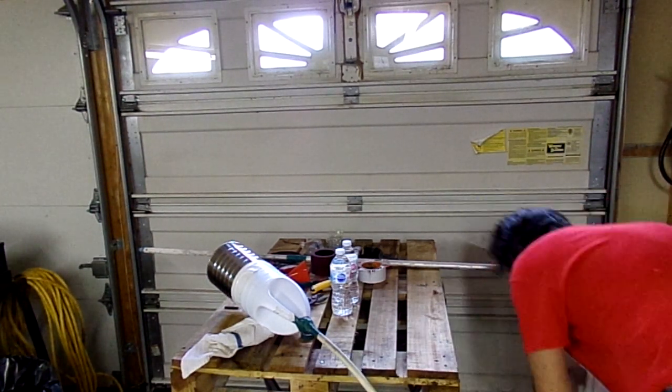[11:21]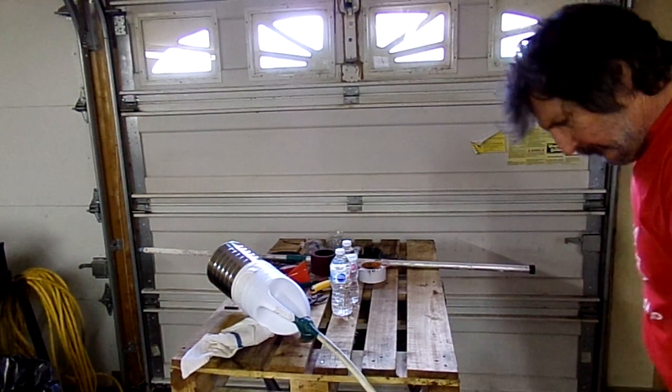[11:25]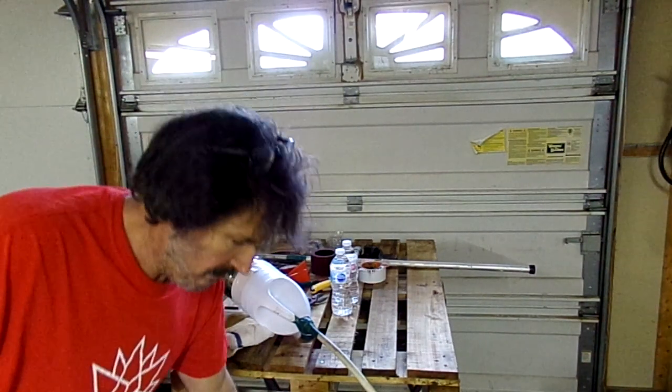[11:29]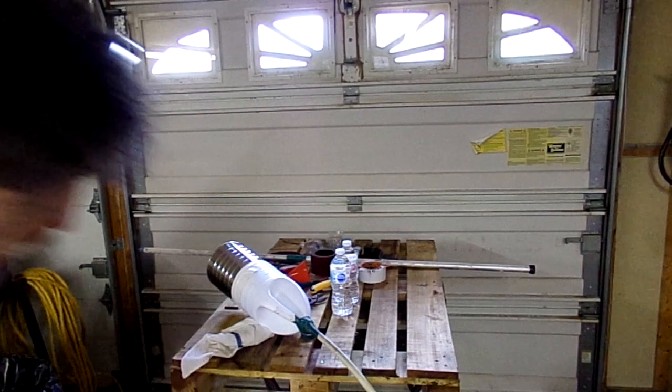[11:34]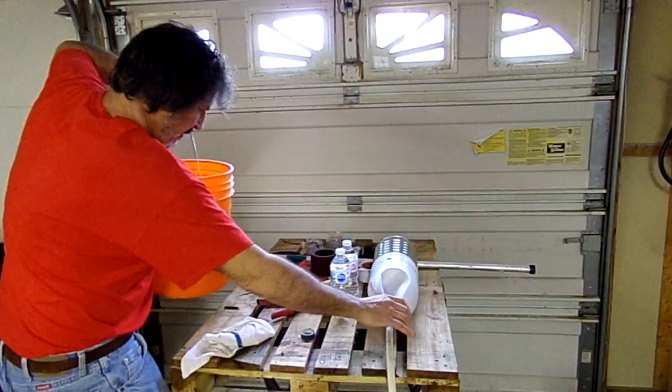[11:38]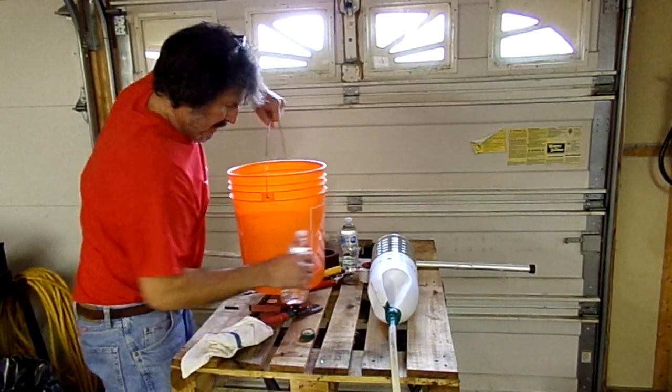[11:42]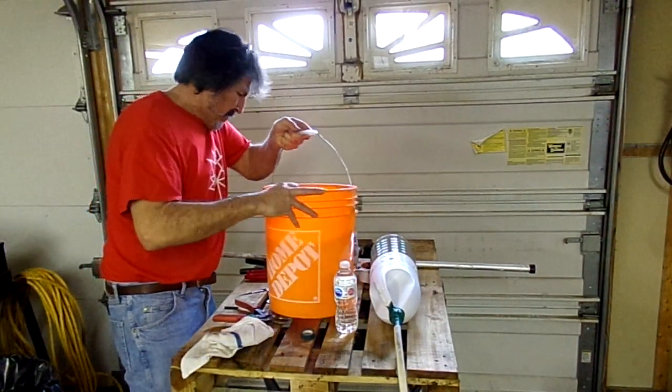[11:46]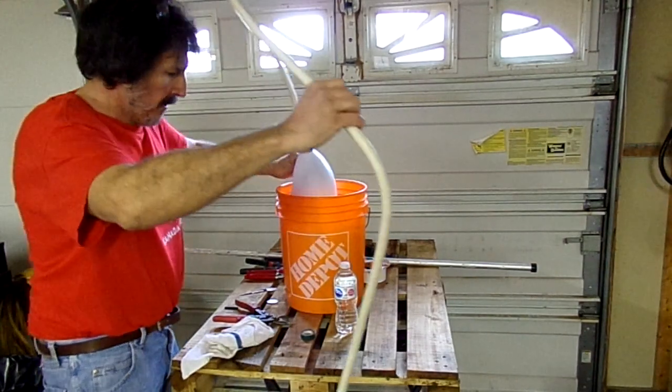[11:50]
Now, let's fill this guy with water and see how we're doing. Okay. I got a little over half. Let's see how that's going to go. Am I on camera there or not? Let's check. No, I'm not on camera there. Okay. There, I think I'm on camera there now. Let's just bring that up. I think tip it over. Okay. Now, let's see.
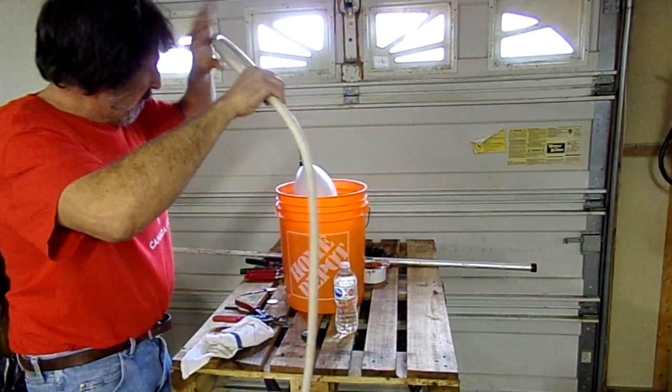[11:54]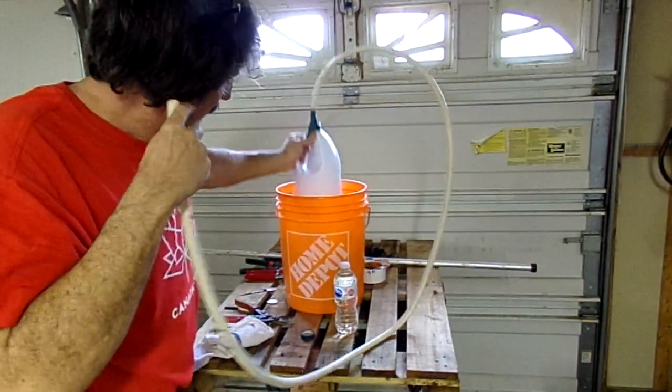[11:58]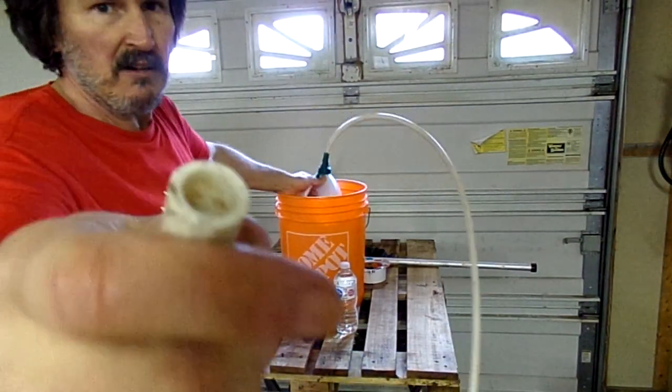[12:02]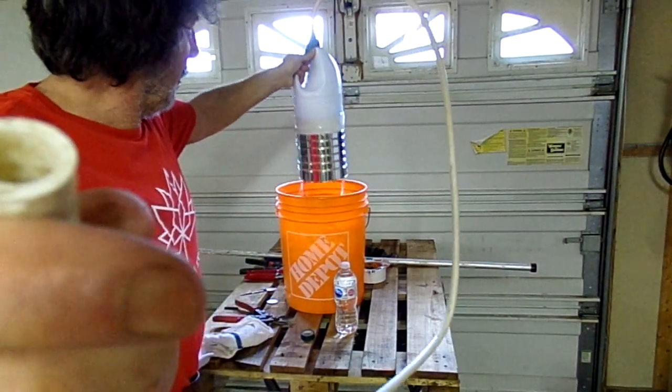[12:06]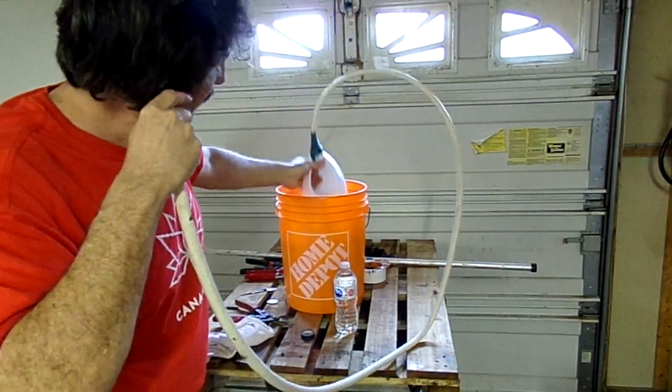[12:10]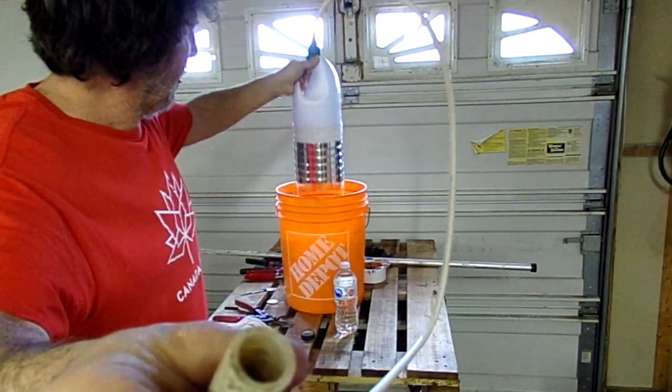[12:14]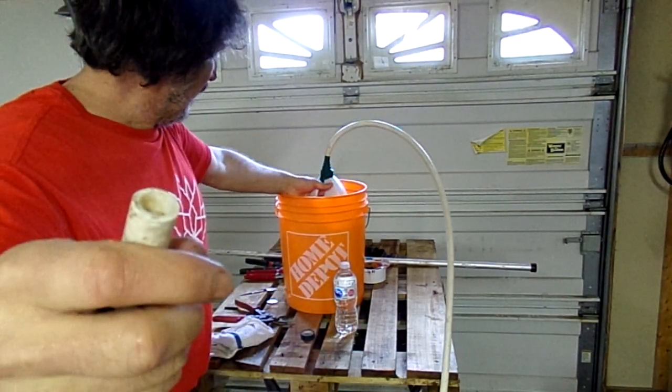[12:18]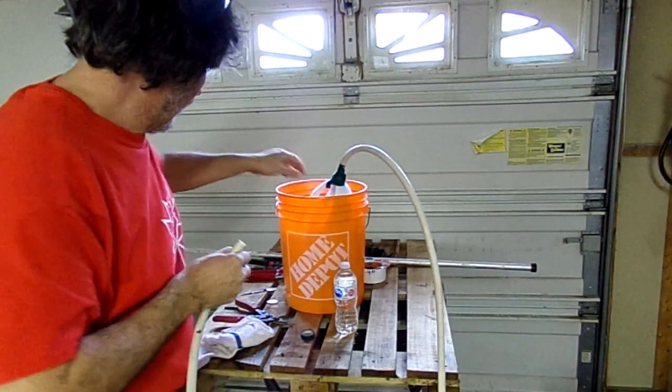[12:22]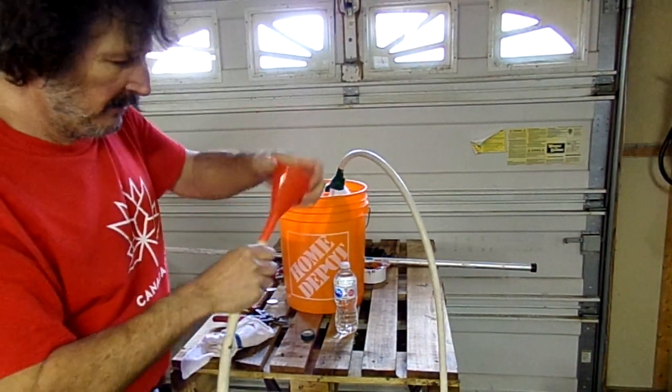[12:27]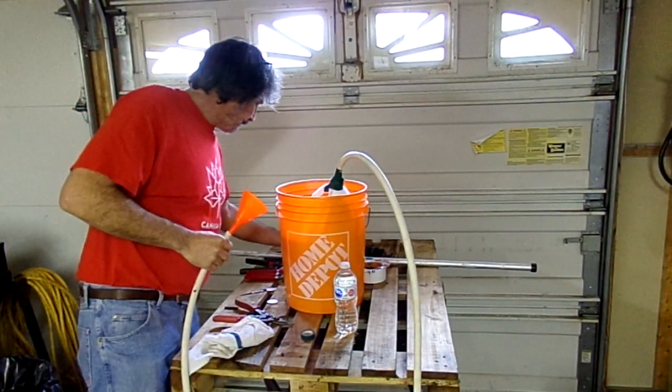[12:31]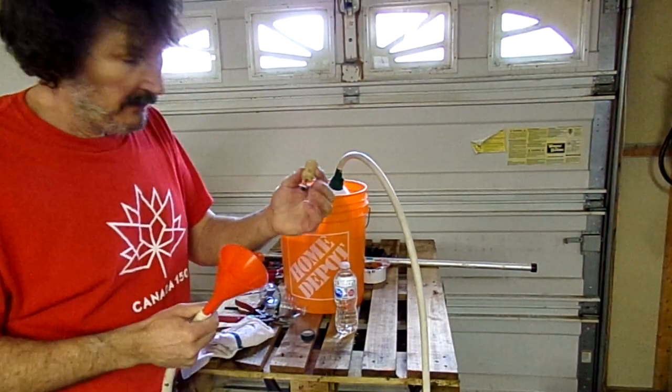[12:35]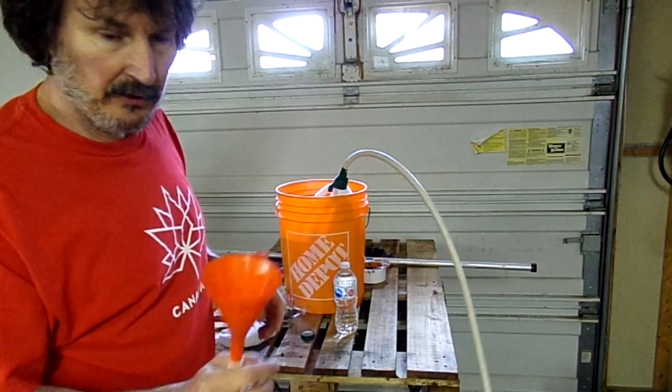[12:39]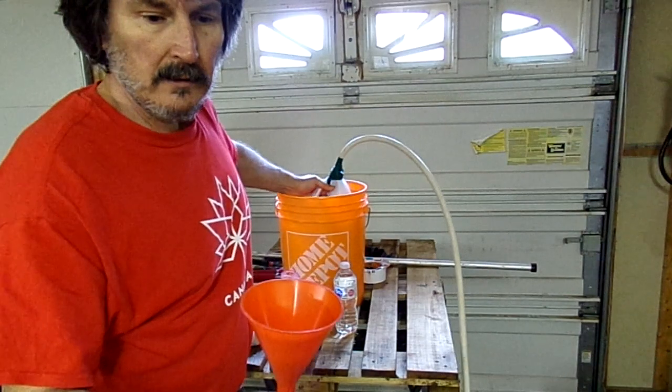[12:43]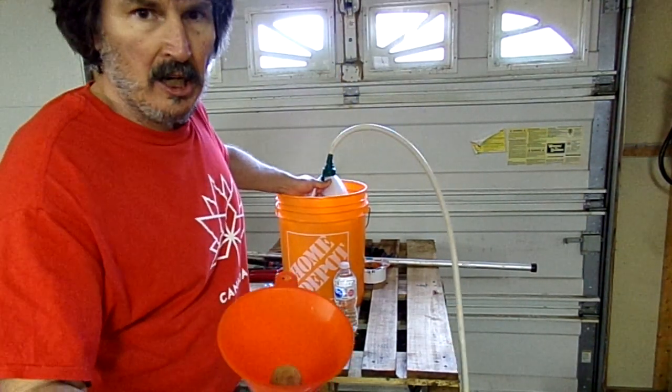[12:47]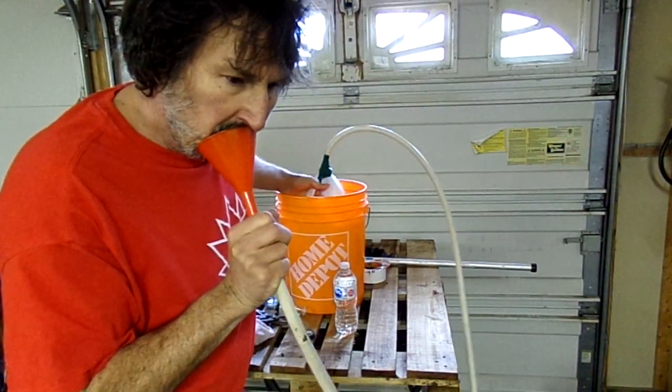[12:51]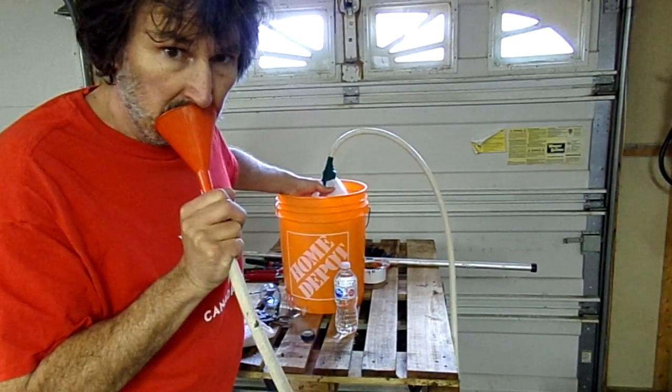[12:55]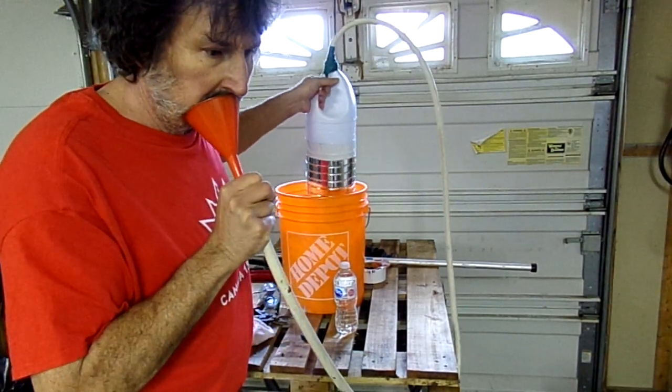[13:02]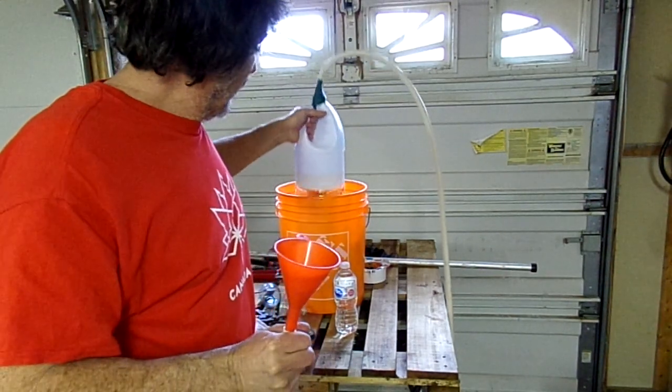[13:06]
Sounds like somebody's breathing. Okay, very good. Now that's the simplest and quickest. Now what you can do, if you have a funnel, is just stick it in there. And I made a valve out of a wine cork, a drywall screw and a little nut just to keep that thing loose. So here we are. Over your face. Oh yeah. That's important. And that's it. That's the first part of the ventilator.
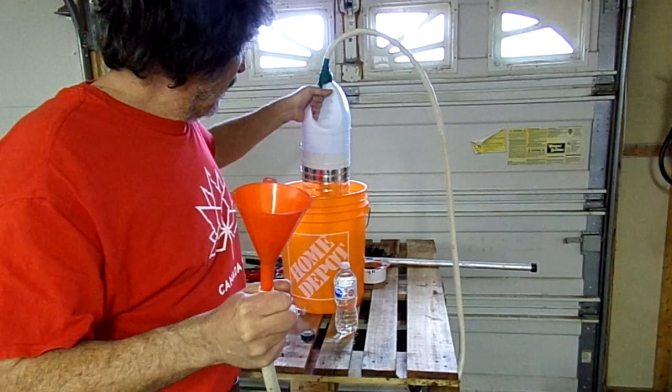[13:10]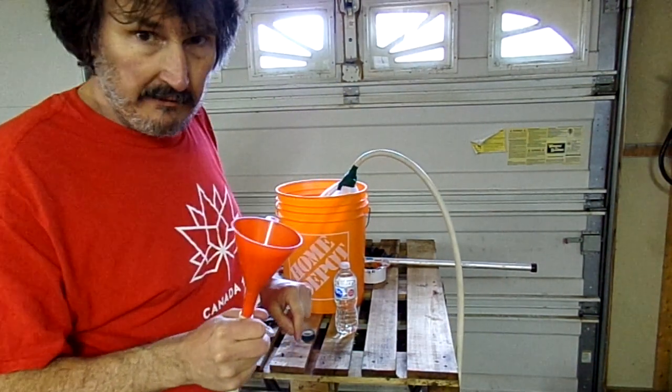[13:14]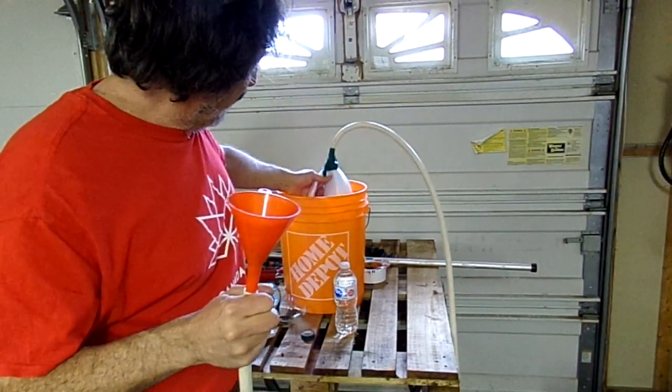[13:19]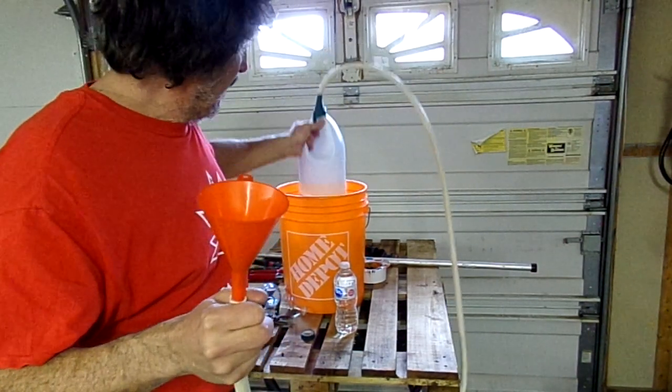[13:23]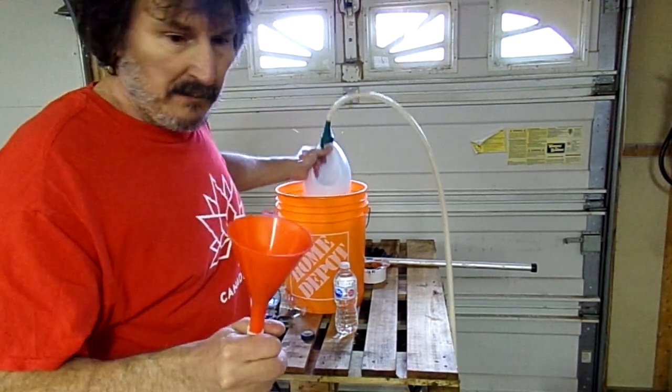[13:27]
Now, what I'm going to do is create another valve, because this is pulling up. Holding the suction under here while I'm doing this is okay for a quick thing, but if I make another valve, then that'll release when it comes up, so it'll be much more efficient and easier to use.
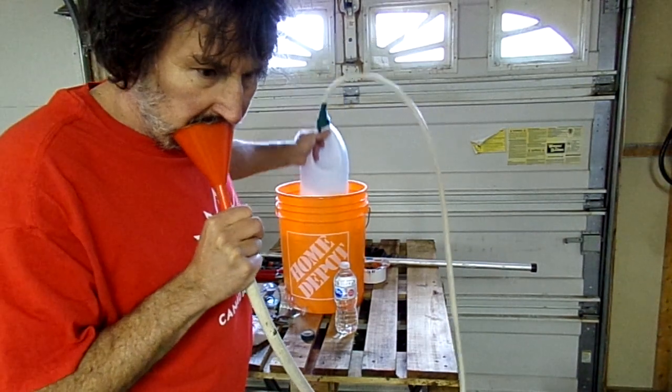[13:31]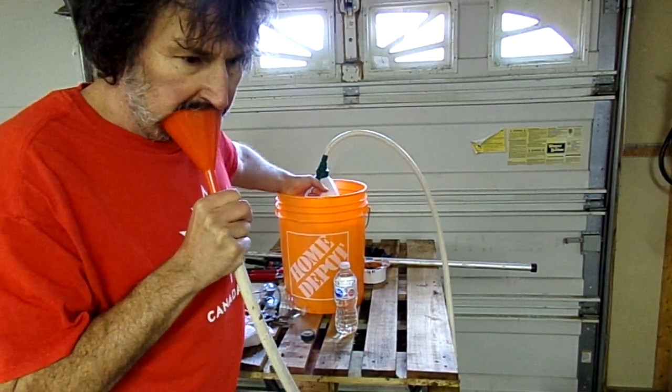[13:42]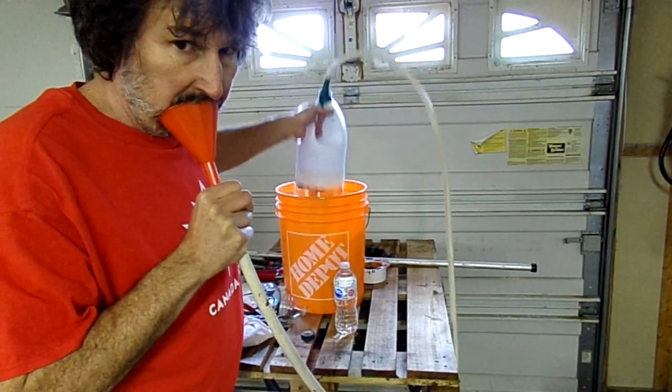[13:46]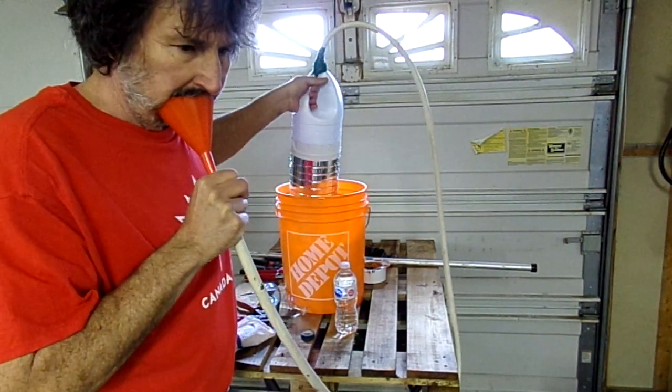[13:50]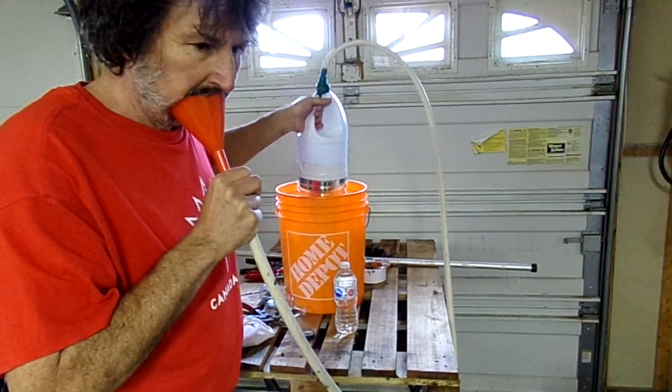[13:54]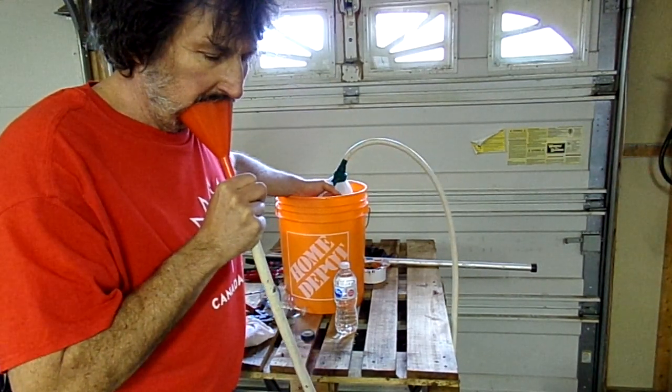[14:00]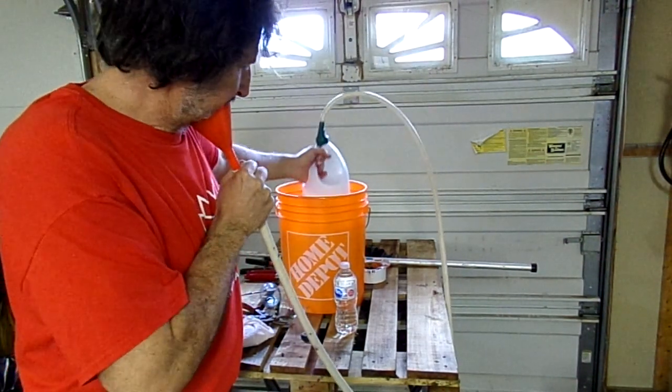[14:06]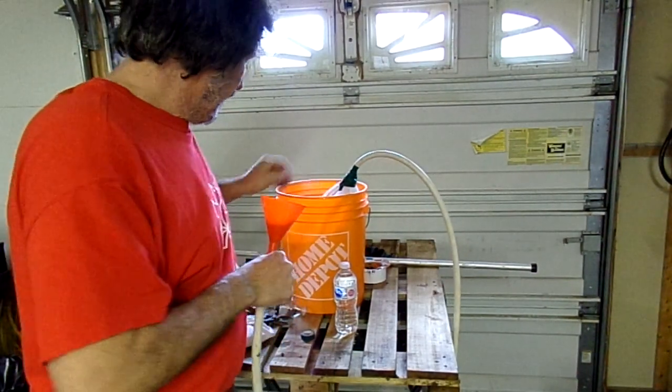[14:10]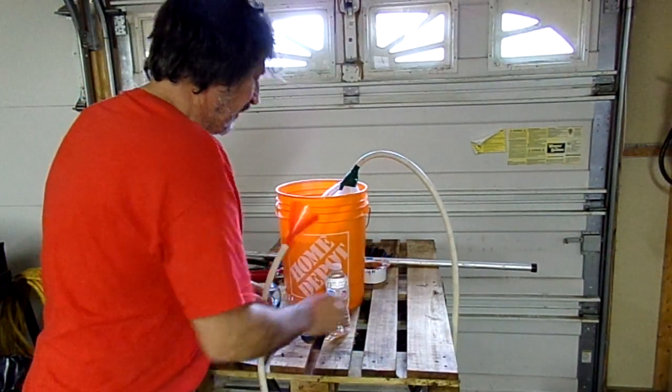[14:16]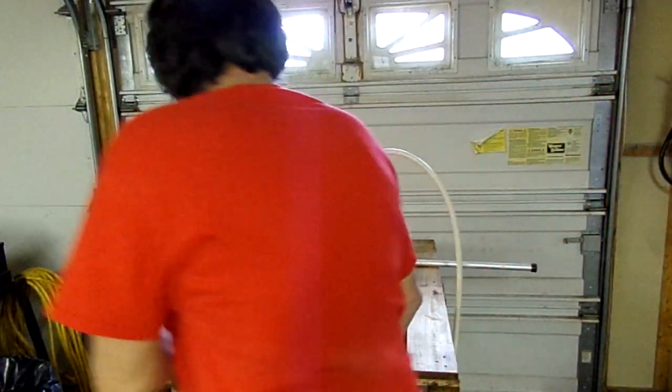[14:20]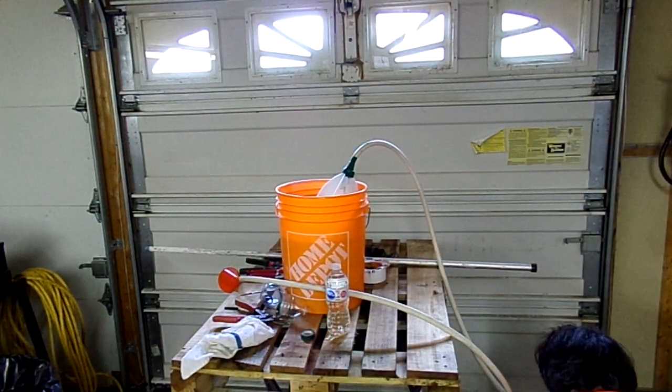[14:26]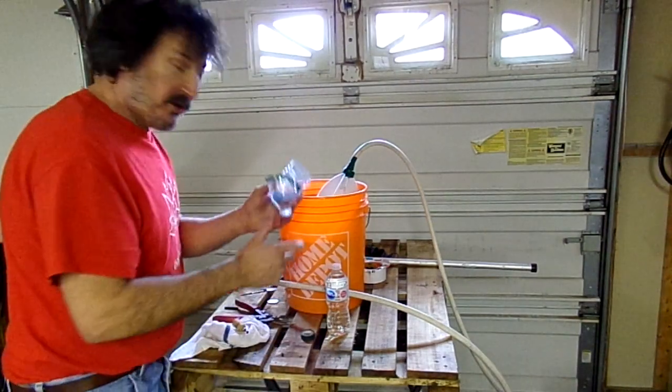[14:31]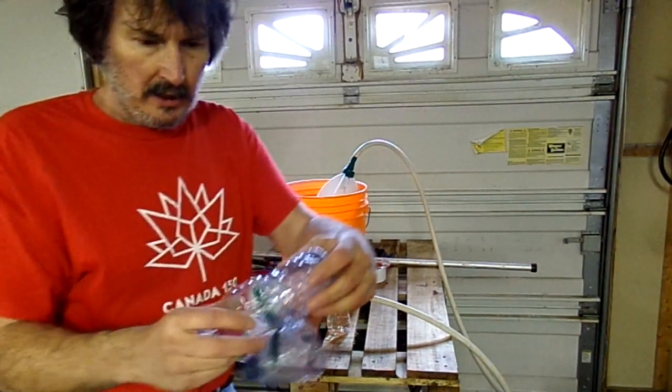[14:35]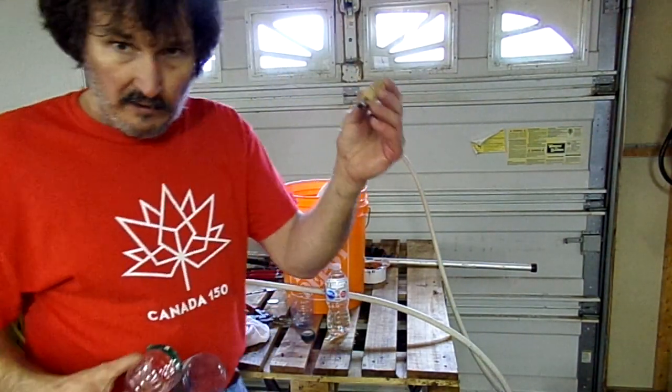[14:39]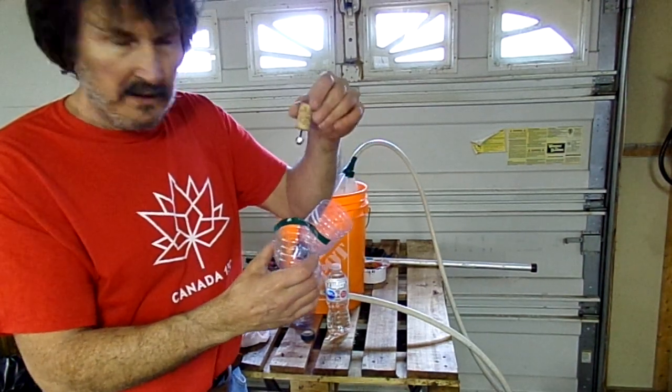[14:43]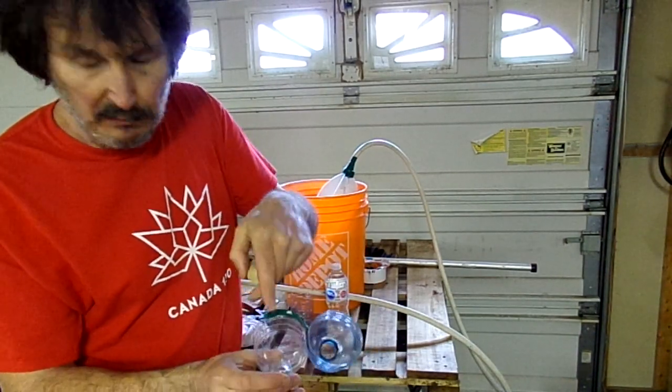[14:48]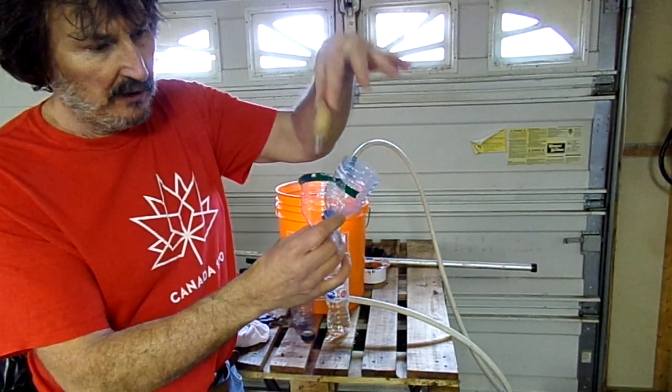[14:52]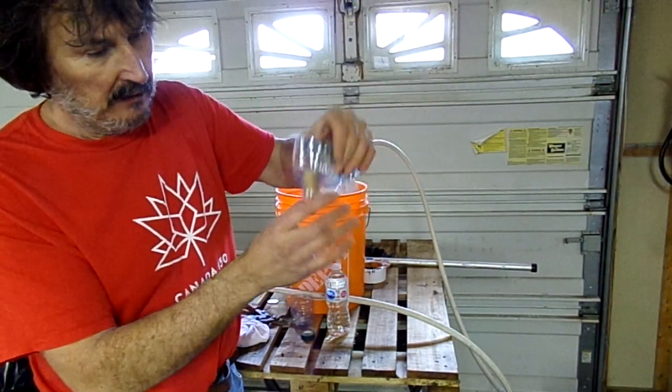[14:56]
I'll give you a quick update. Now, to make your valve, you use two water bottles. You cut your water bottle in half. Get your wine cork, drywall screw, and a little nut. The little nut is just to weight the bottom of the cork to seat it. You have a nice venturi that will seal up with a water bottle down below. I don't know if you can see that or not, but you don't want the cork getting stuck. And if you have a little bit of metal, it'll rattle a little bit loose.
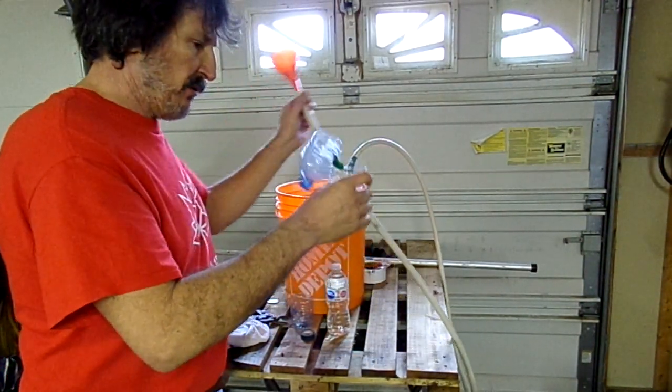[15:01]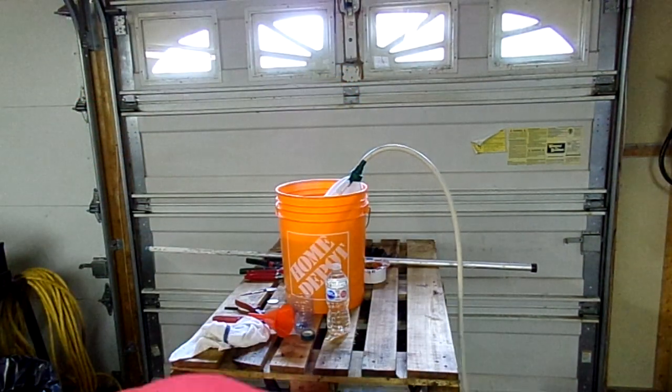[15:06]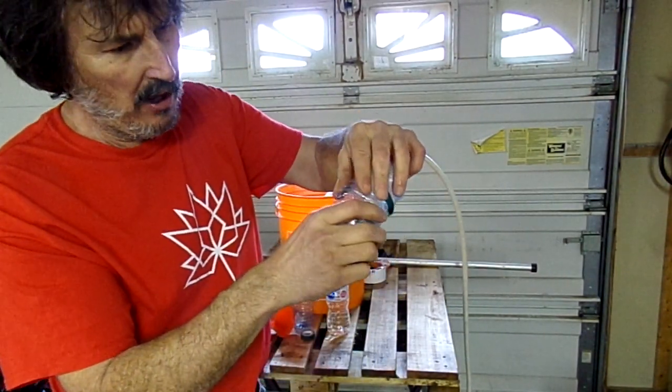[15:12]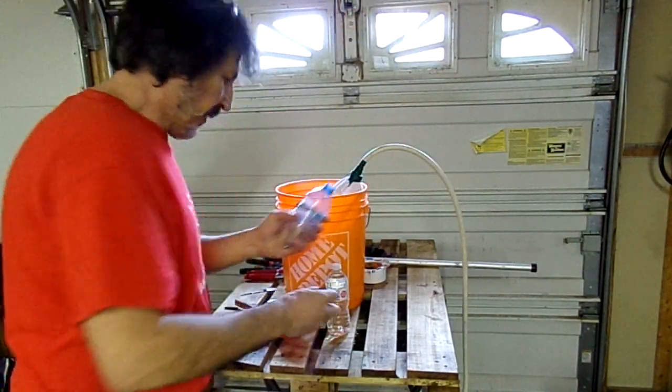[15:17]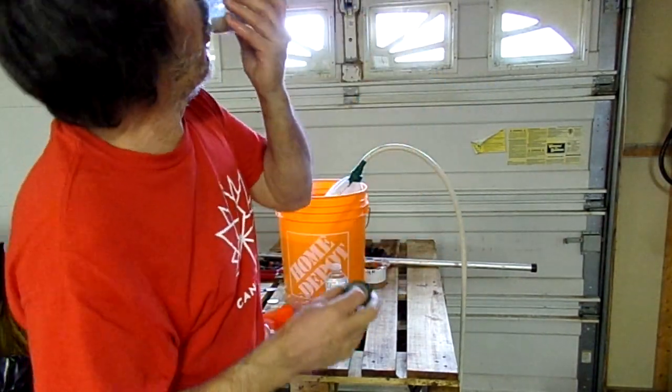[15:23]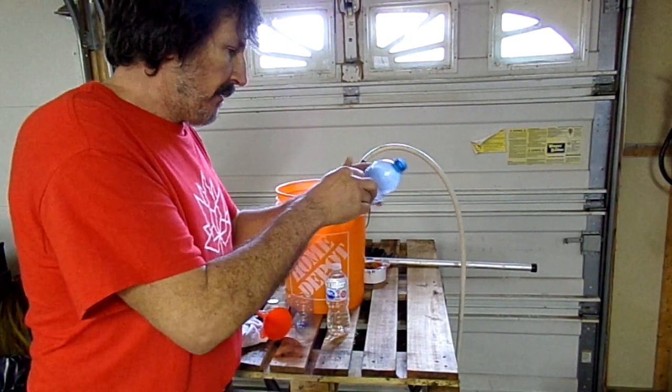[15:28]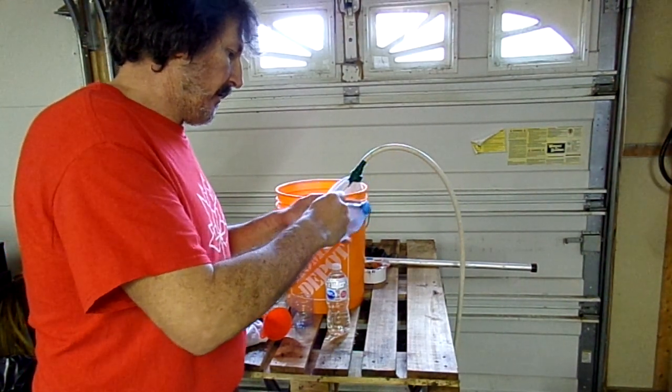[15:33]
Let me try this here. See if you can see this, just so you can see how this is going to work. Okay. And anyways, after you've got your one water bottle, you can fold this over in there, and now you have a complete valve that you can use. This is going to be the heart of your ventilator system. You can see that working. Just tape, just with a bit of tape. You can tape this up.
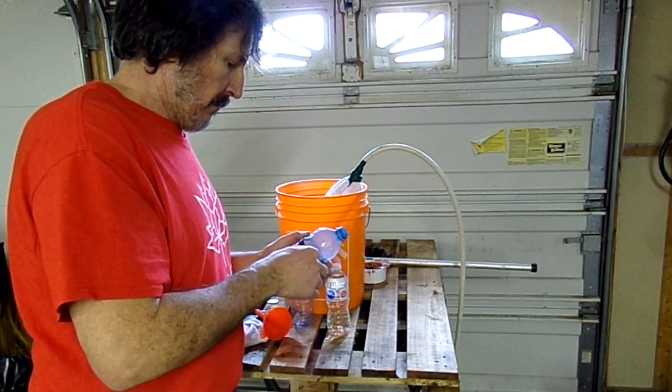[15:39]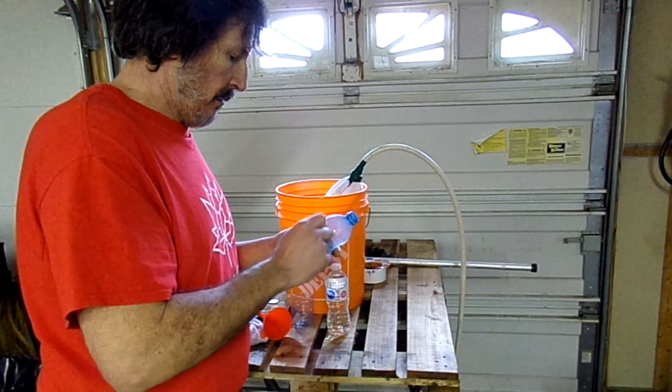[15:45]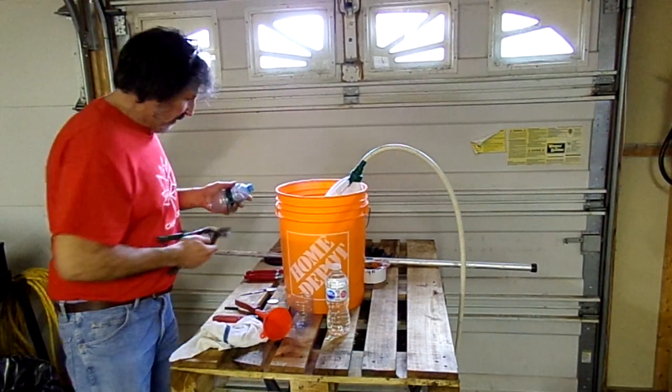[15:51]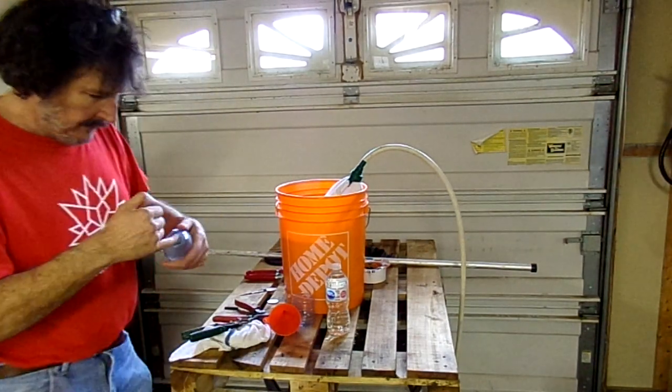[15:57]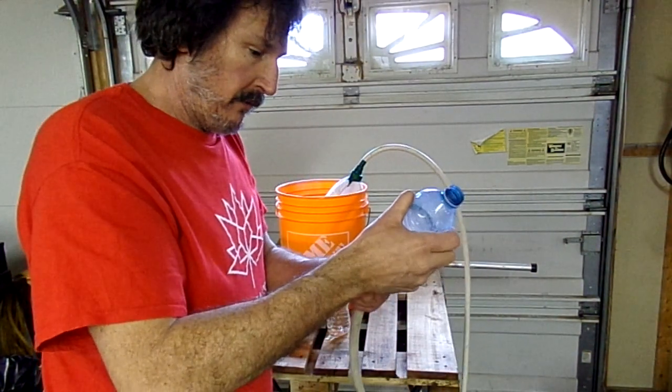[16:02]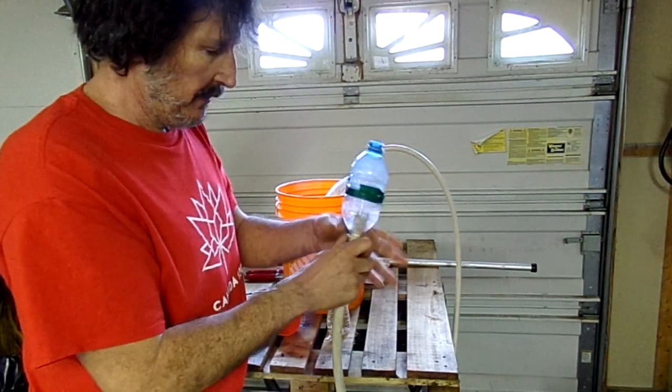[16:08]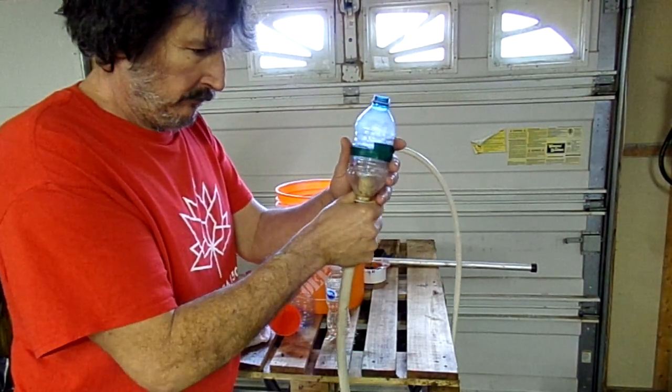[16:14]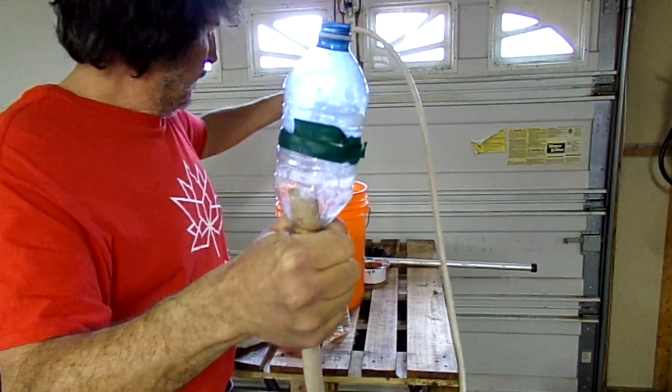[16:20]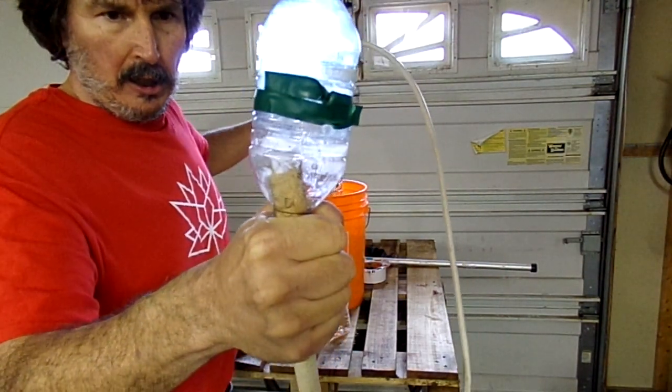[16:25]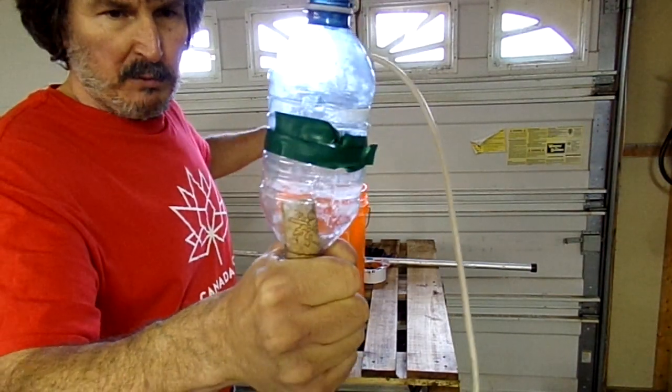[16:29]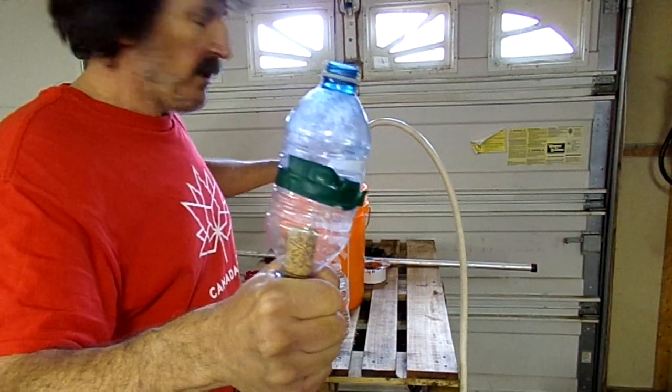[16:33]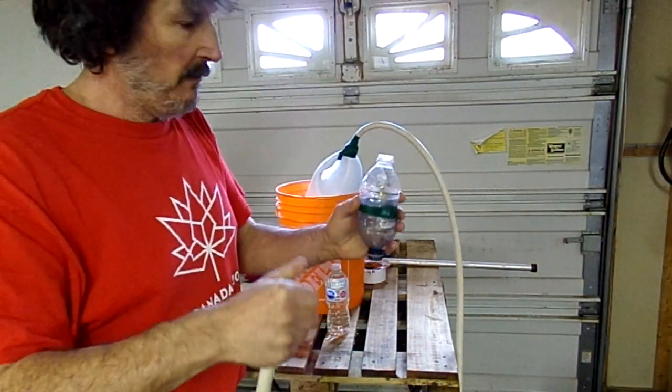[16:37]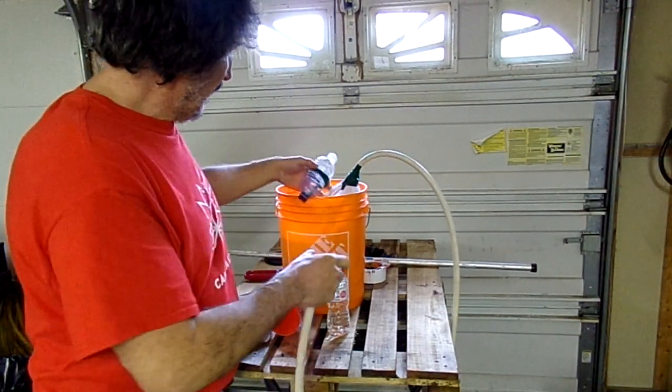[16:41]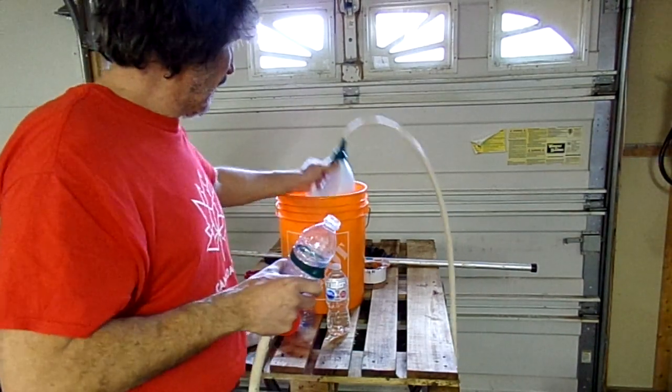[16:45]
That's how the valve is going to work. And you just put that in line and keep it upright. And we're going to put another valve in here so you don't have to worry about the water flowing back. We'll run that one upside down, in like so. So essentially it will suck in and then pump out, so you won't have to break the vacuum every time.
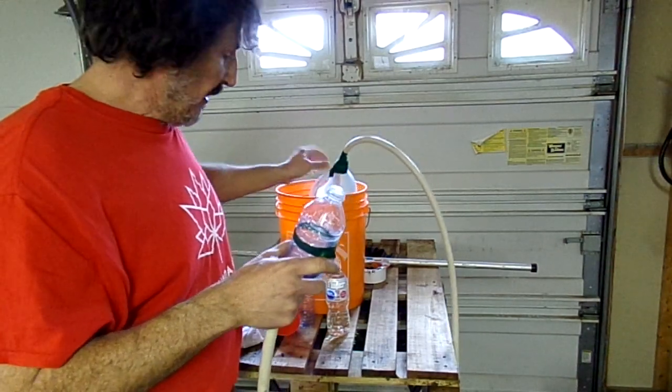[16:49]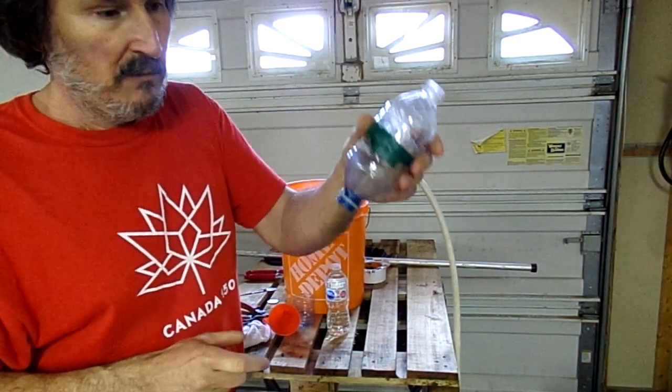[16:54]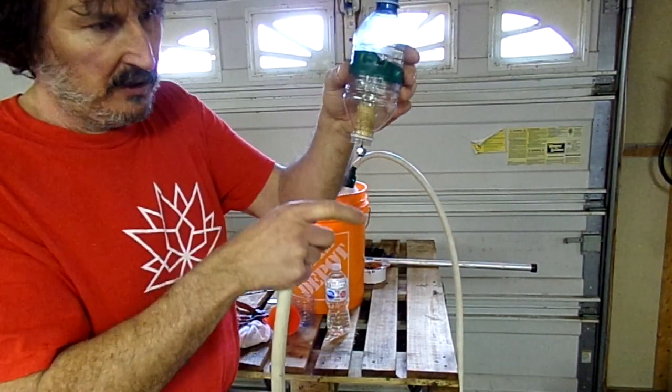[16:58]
So anyways, that's it. I'm going to post this so that it'll help you guys with making a homemade valve. But it's nice to have a little bit of weight on the bottom there with the nut, just to keep the thing seating perfectly every time. Okay.